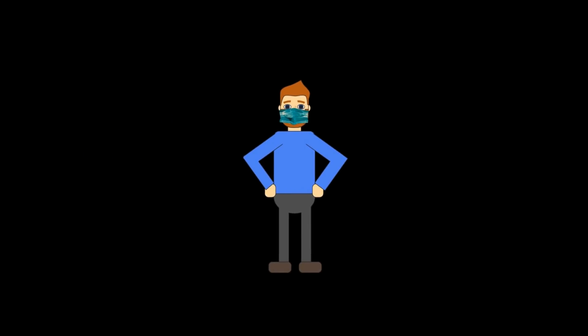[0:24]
Hey guys, so the coronavirus is going around. N95 masks are hard to find because people keep buying them off the shelves. Doctors and hospitals are in need of these masks. So I decided to do a video about how you could make your own mask from materials that you would find in your own home.
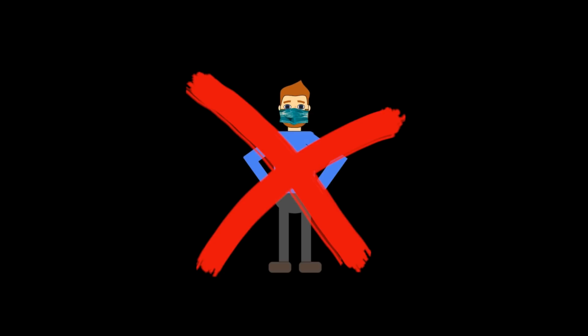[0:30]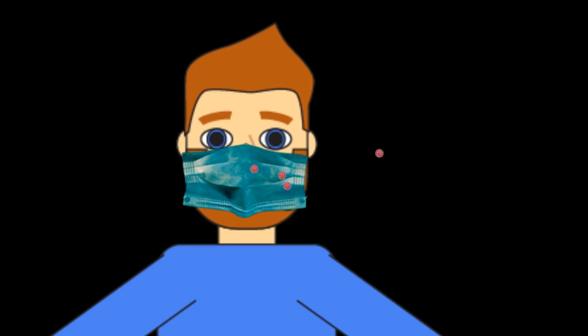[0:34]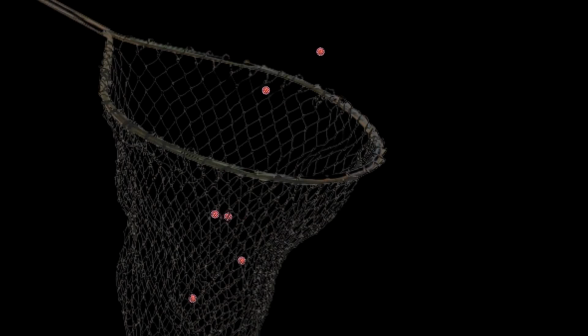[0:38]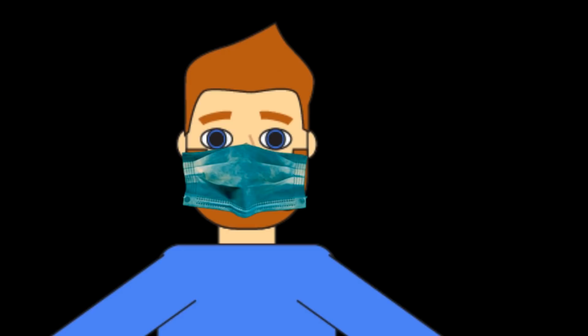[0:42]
Many people today are wearing masks to prevent the spread of COVID-19. In fact, it's now becoming a trend on social media and is used as an everyday accessory. However, this will do little to protect you from getting the virus. In general, surgical masks filter particles to approximately 5 microns in size. Because of this, it's only best to use them if you're sick, as a way to block the virus from finding another mode of transmission.
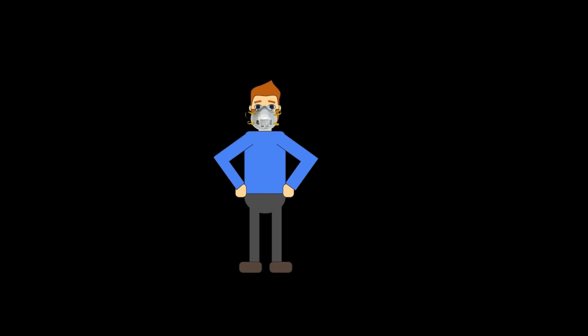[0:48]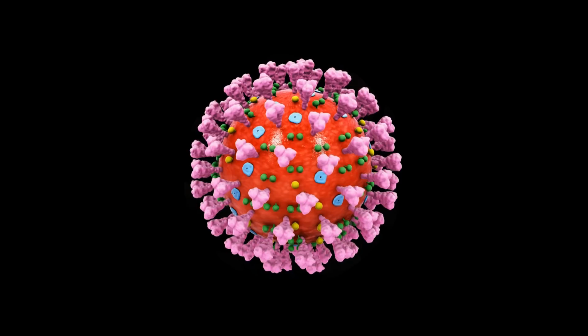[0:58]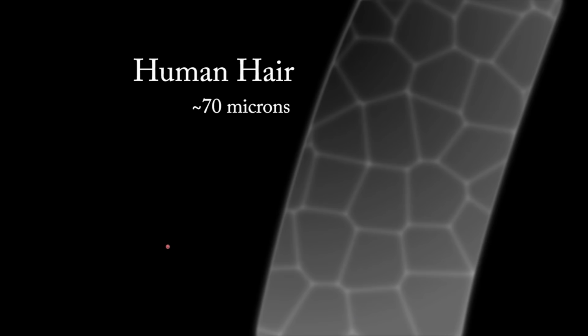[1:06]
N95 is a government efficiency rating that means the mask blocks about 95% of the particles that are 0.3 microns in size or larger. The COVID-19 virus is approximately 0.125 microns. It often travels in biological aerosols from coughing and sneezing, which range in size from 0.5 to 0.3 microns.
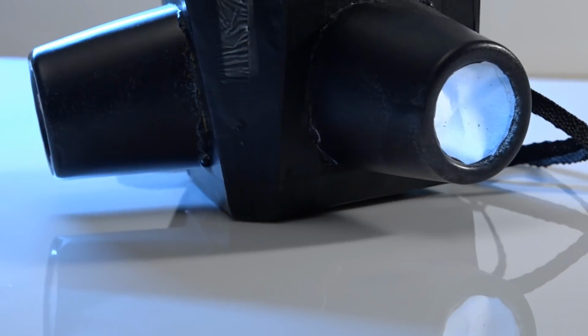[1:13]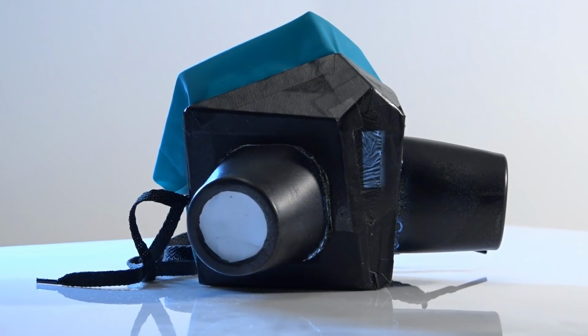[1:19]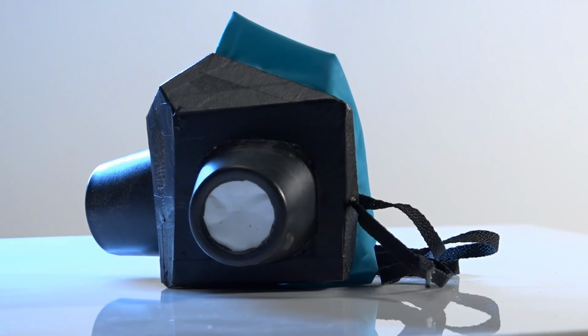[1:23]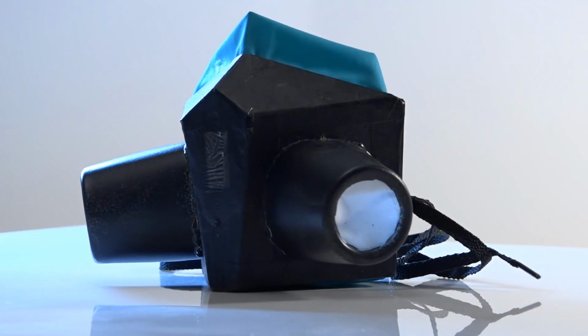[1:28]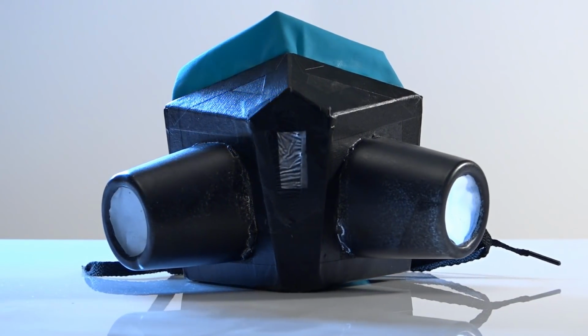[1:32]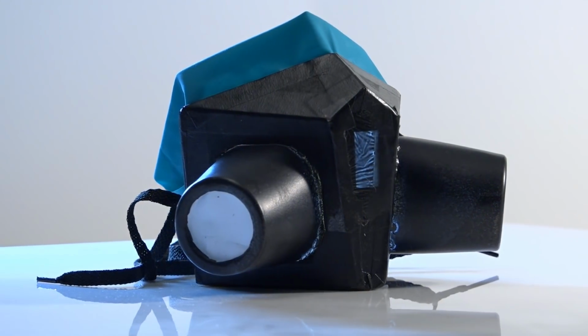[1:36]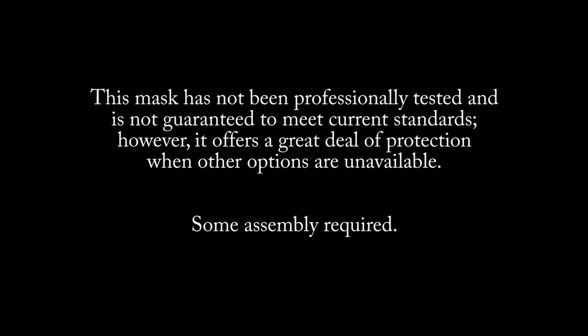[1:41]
Introducing the Big Bits N100 mask. It's water-resistant and has replaceable filters. It's comfort-fitting and made entirely out of material you'd find in your own home. The mask is far more effective than an N95 mask, and with proper care, could last for months. And at a cost of $1.50 each, it is guaranteed to be your mask of choice for frontline care when commercial masks are of no use. Make yours today, some assembly required.
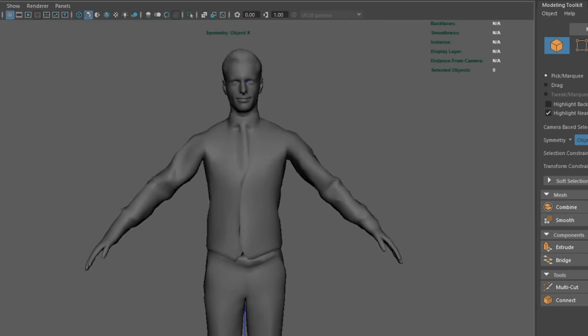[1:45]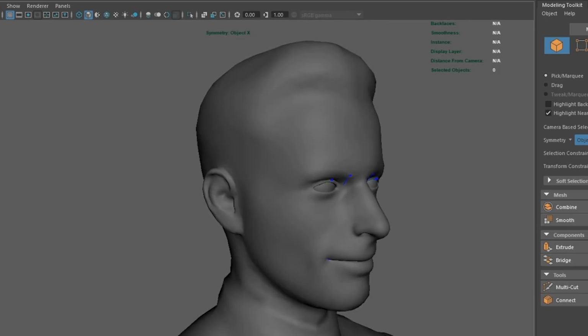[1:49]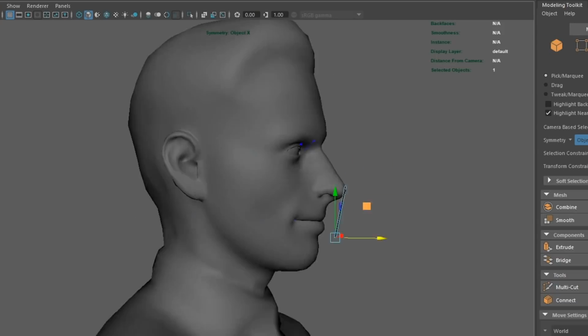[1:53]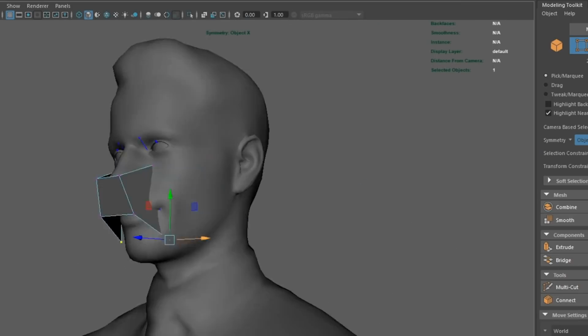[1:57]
First, I went over to renderpeople.com and downloaded a free human scan, and I modeled a mask to fit using Maya so I could keep the polygon count low. This helps to accurately unfold the model into cardboard pieces later.
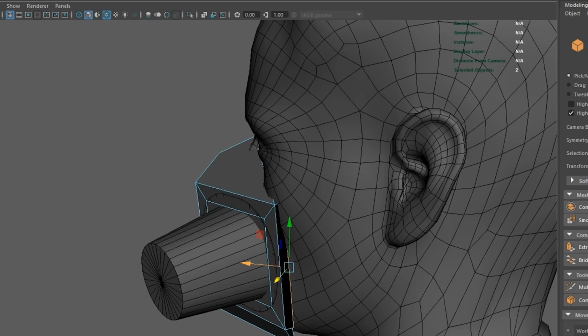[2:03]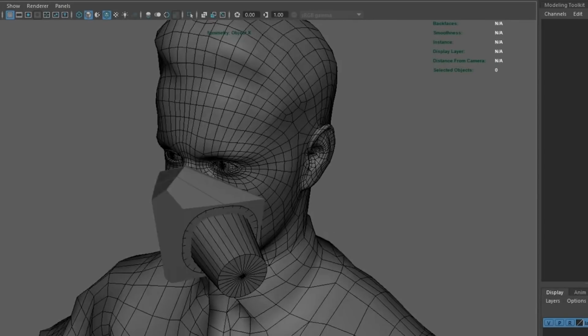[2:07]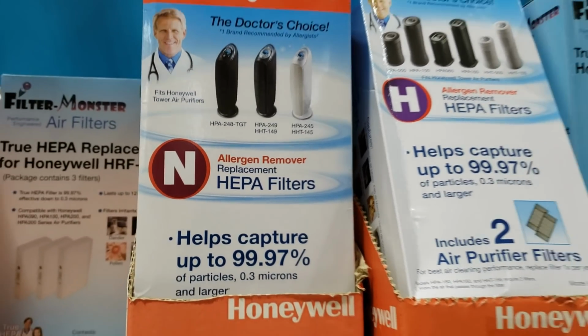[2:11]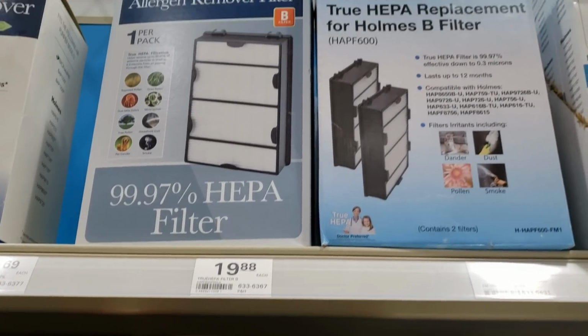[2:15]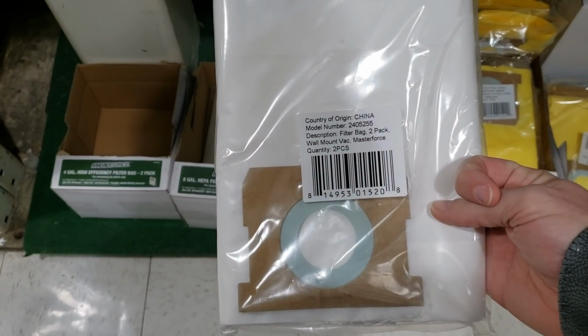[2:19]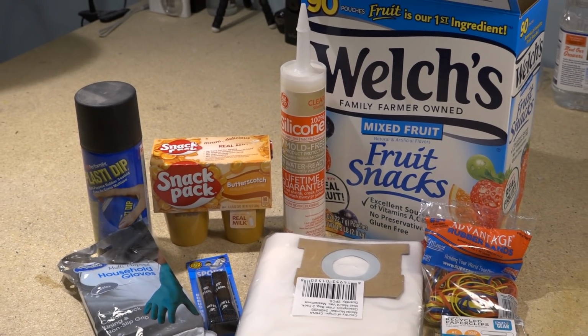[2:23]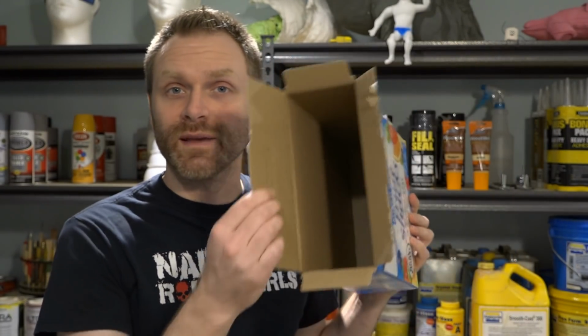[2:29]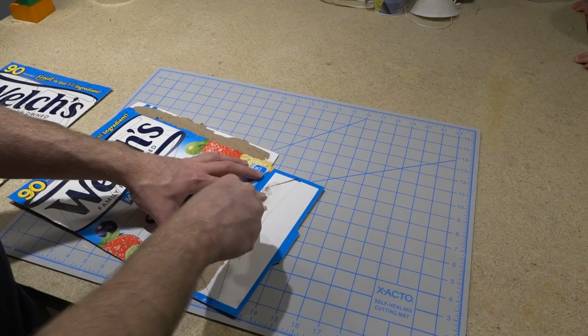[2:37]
My goal with this project was to use things that might already be lying around the house. But if they're not, you can still find them readily available in stores, as none of these components have been hoarded yet. Now you gotta go find the thickest cardboard that you can find. For me, that was a fruit snack box. It feels like it's about 3 times thicker than a cereal box, so we want it to be sturdy, but we want it to be thin.
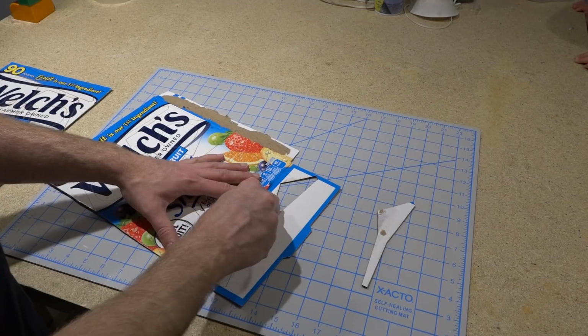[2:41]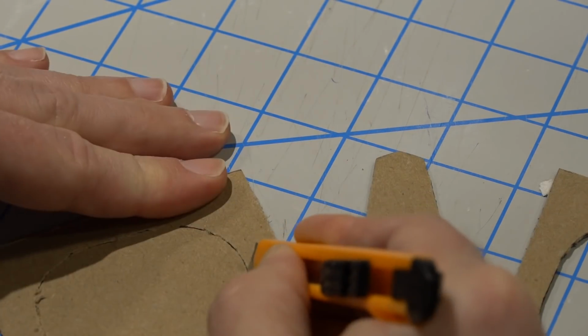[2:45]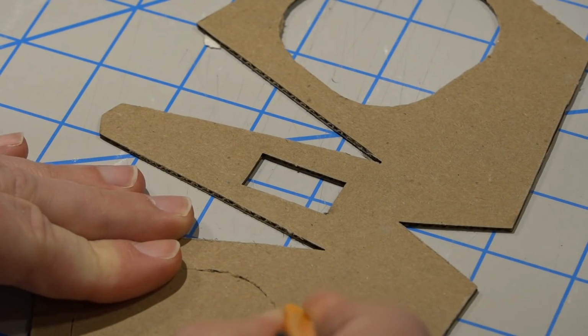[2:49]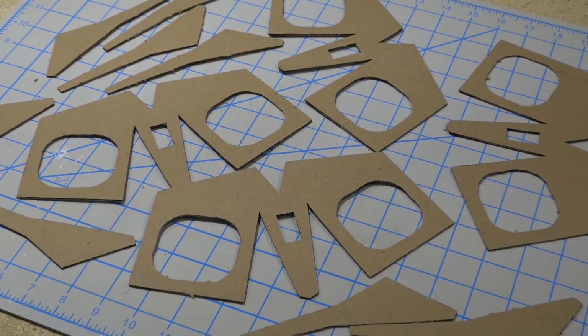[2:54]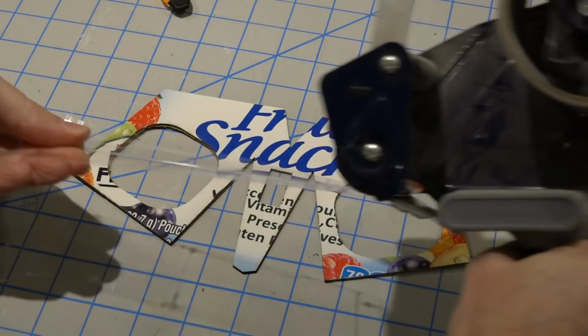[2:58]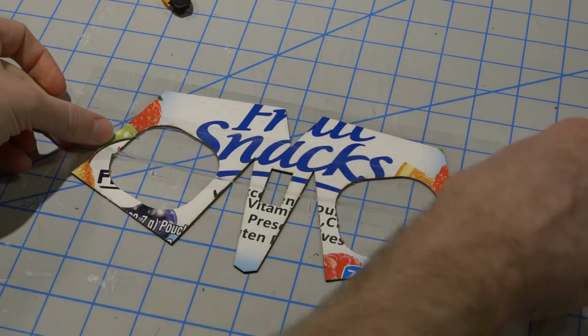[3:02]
Step 1. Cut out the cardboard using the template on the Big Bits website. We want the mask to be reusable, which means we have to make it water resistant. I did this by coating the inside surface with clear packing tape.
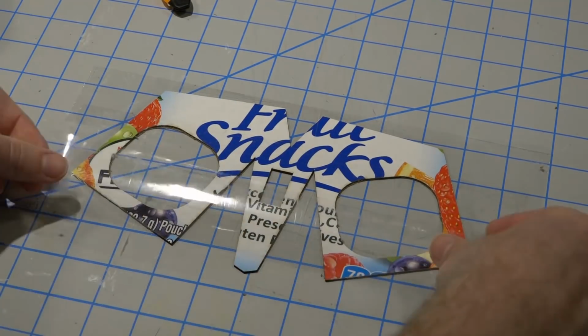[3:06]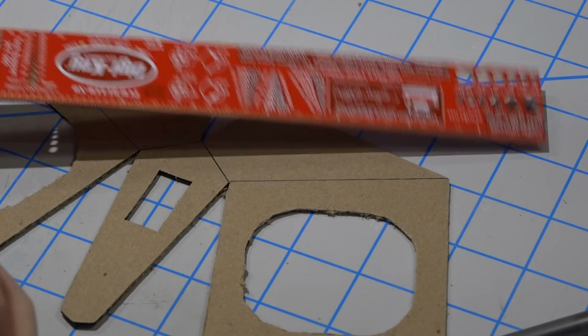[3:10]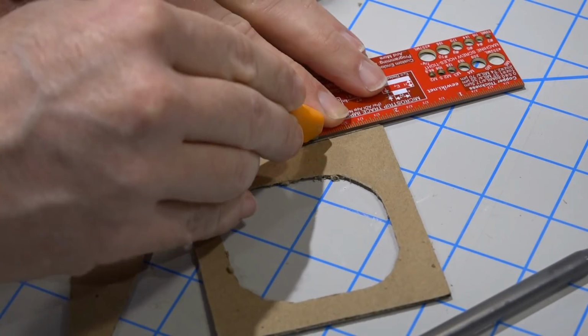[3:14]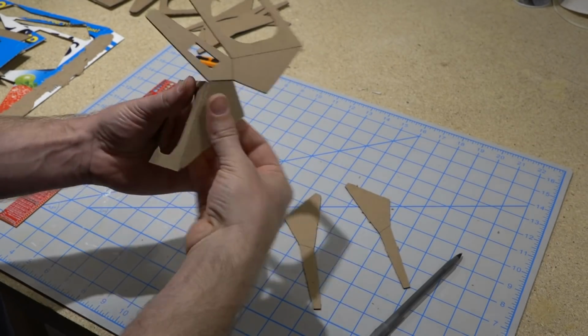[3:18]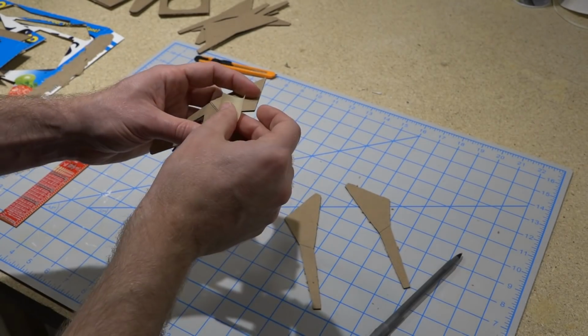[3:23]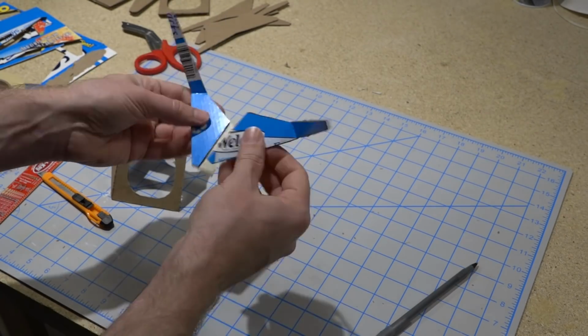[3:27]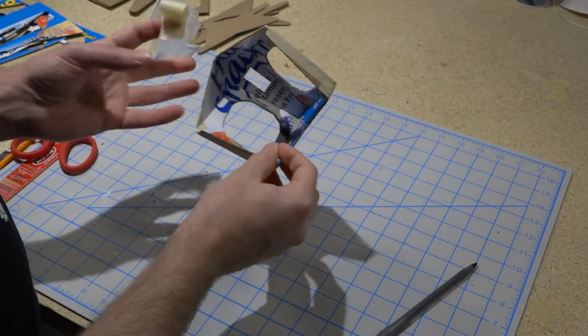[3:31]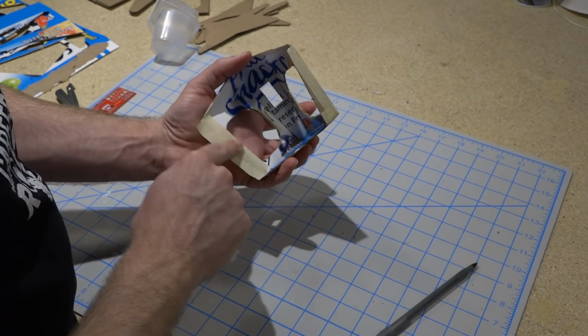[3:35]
I connected the points with a straight edge and scored the cardboard with a blade so it could be easily folded. Then I taped up all the seams and edges with masking tape. I specifically chose masking tape because I will coat the outside in Plasti-Dip and it sticks nicely to the masking tape.
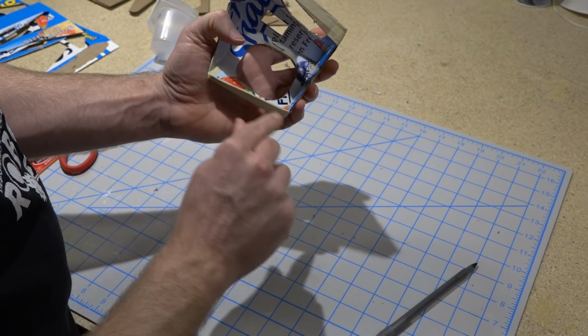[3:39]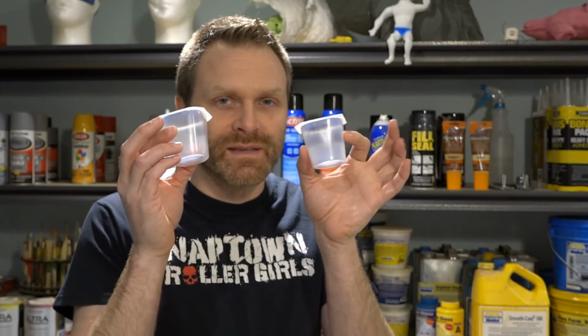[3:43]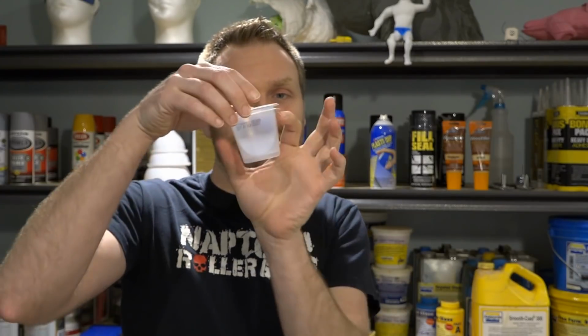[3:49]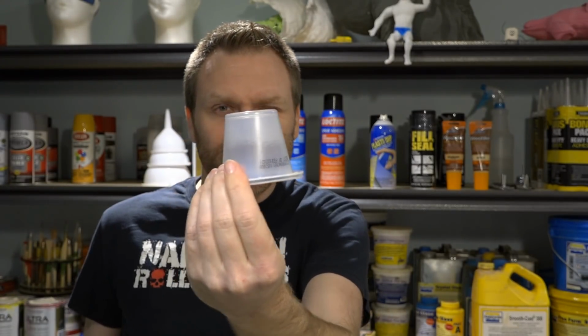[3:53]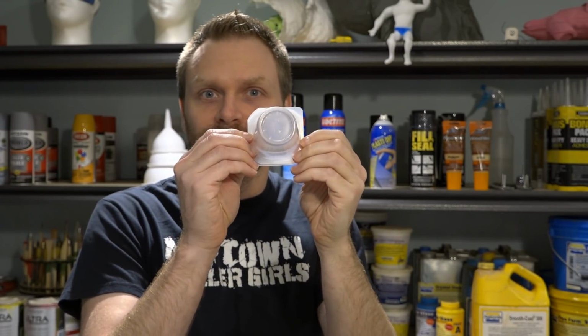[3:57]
Remember that pudding that I bought? We're going to use the cups as the filter cartridge. So the important thing is that you get cups that are tapered so that they're stackable. This little spot right in there is where that filter is going to go. So we've got just enough space in there for that HEPA filter.
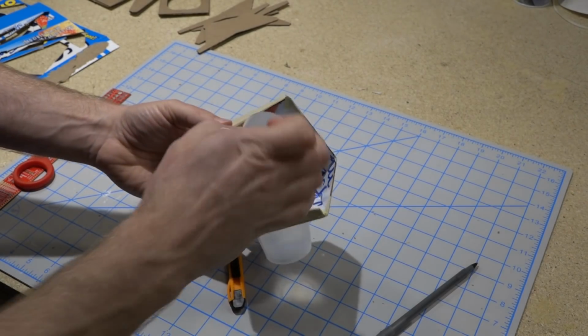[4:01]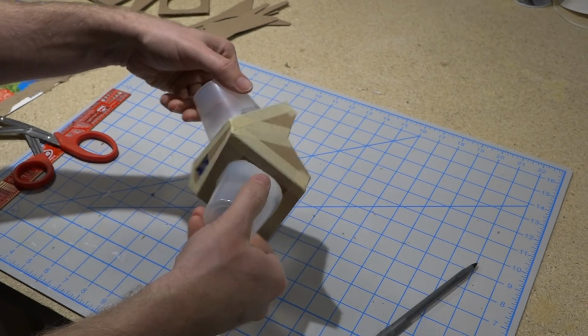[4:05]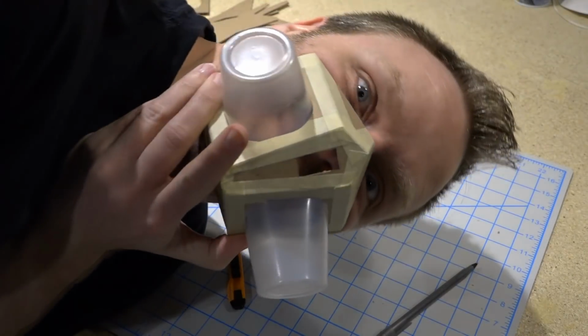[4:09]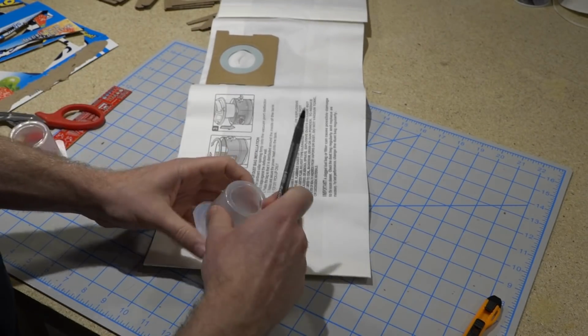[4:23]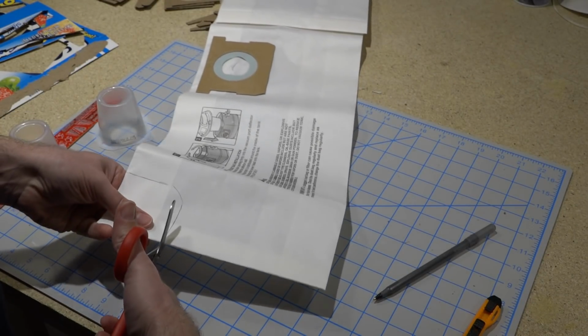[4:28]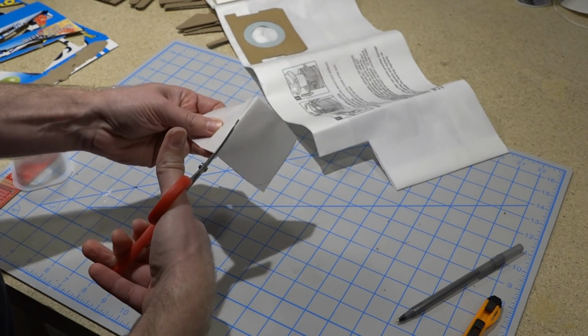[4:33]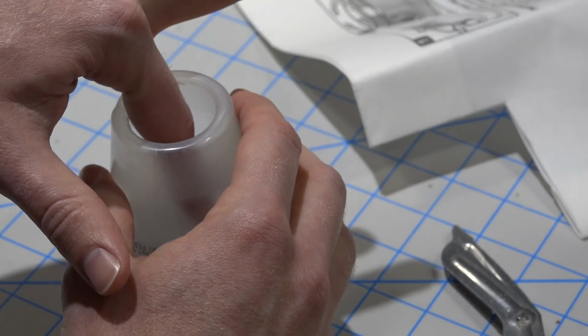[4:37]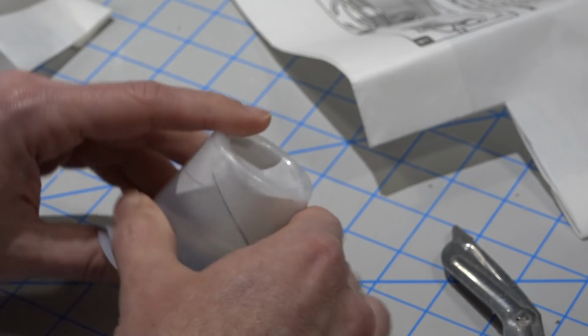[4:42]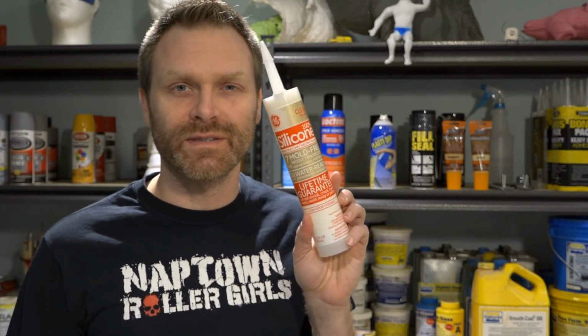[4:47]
The filter that I got is a HEPA filter for a shop vac. This particular HEPA filter filters out 99.97% of all things over 0.3 microns in size. We're going to seal up all the cracks and crevices with silicone.
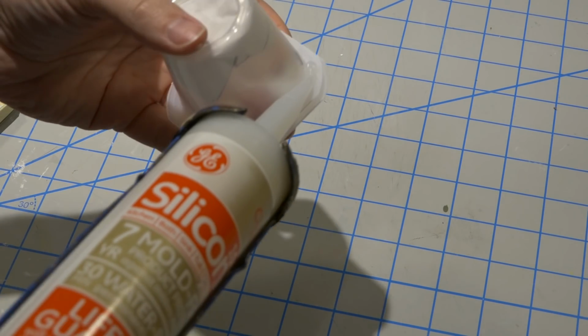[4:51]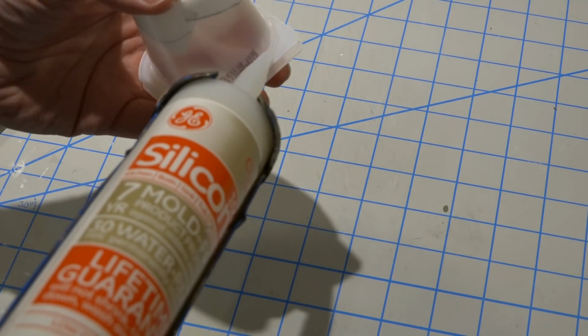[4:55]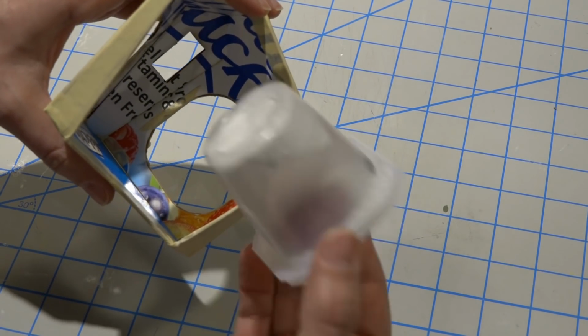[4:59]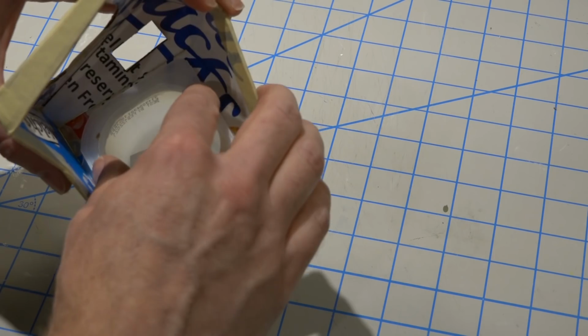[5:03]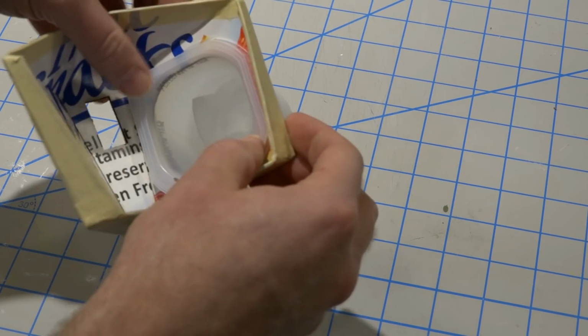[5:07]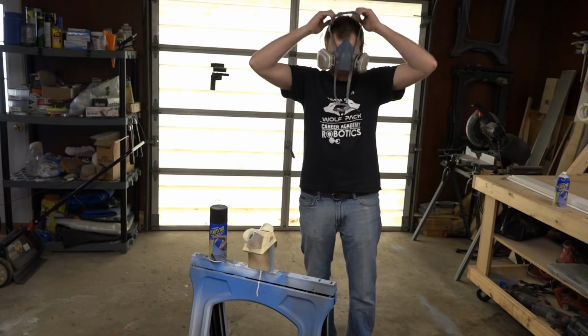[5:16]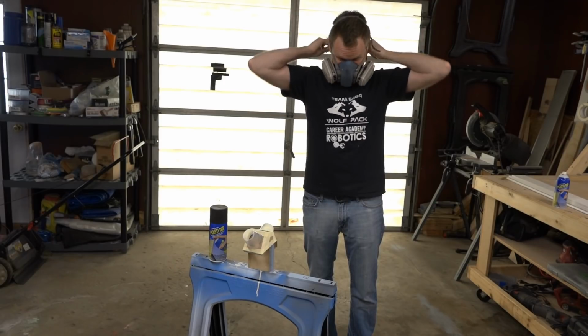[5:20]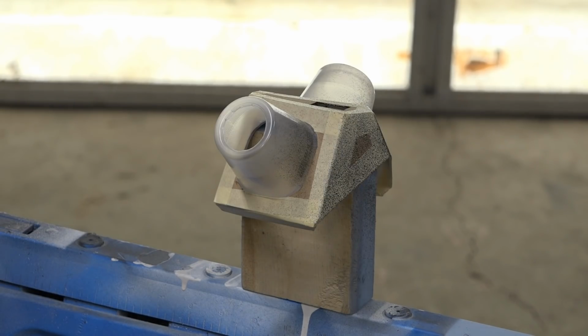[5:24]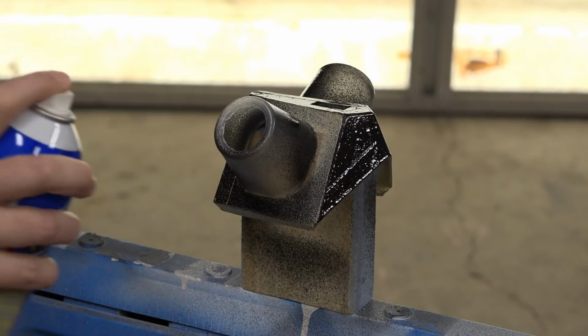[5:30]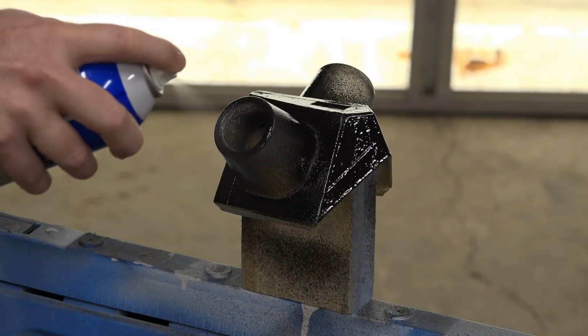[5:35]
I'm going to use Plasti-Dip to make the outside surface of this mask impenetrable. Ironically, you need to be wearing a P100 mask when you spray Plasti-Dip. This coating will not only make the surface impenetrable, but it will also make it water-resistant, meaning the mask can be sterilized and reused. For a cheaper option, just use packing tape to seal the outside.
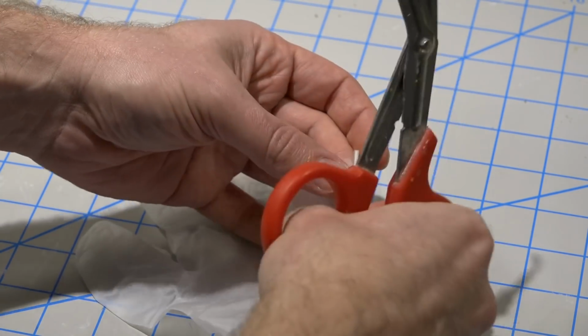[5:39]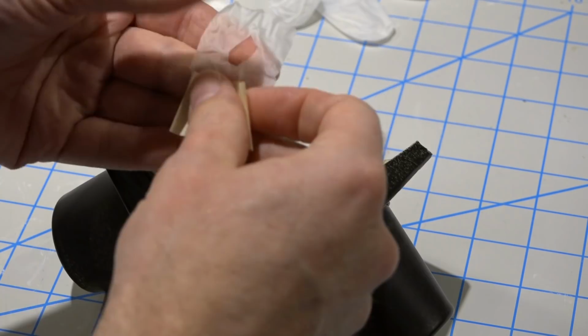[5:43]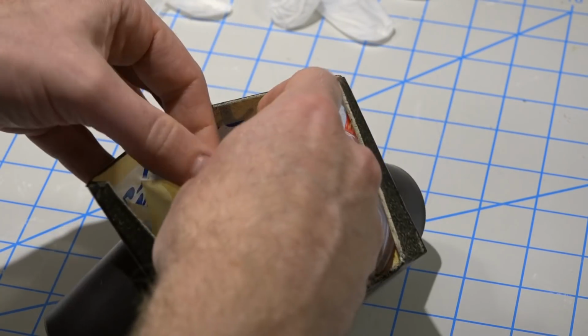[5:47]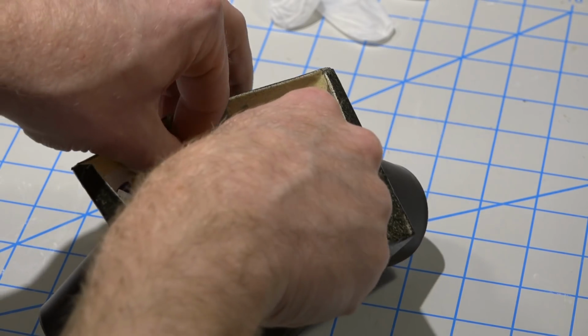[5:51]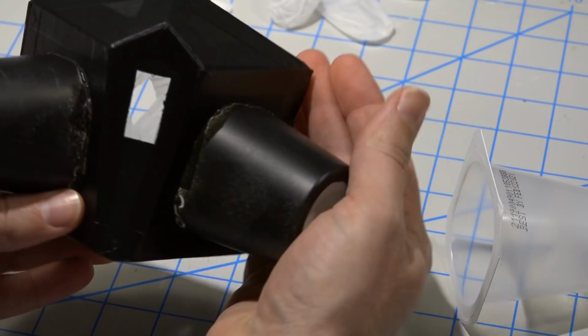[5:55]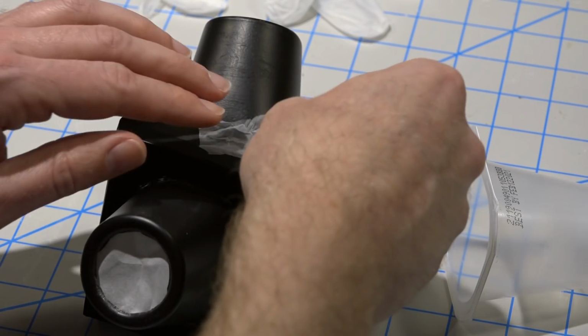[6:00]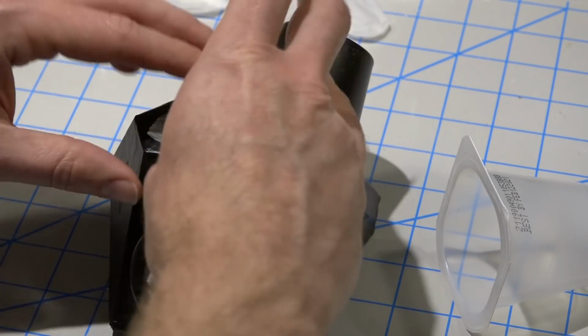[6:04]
Here I made a simple one-way valve to make exhaling easier and to help cut down on moisture buildup inside the mask. This is an optional step and may or may not decrease the protective qualities of the mask. The valve is made of two layers of rubber. The inside layer has a hole in the center, and the outside layer is stretched tightly over the hole with a gap in the tape to let the air out.
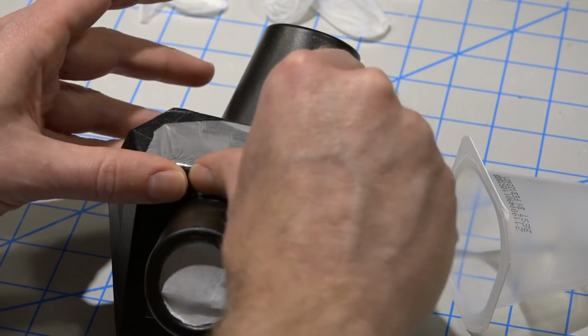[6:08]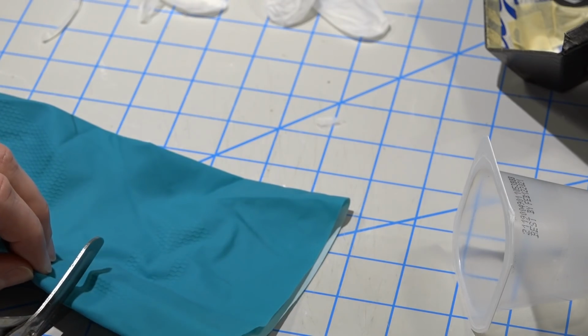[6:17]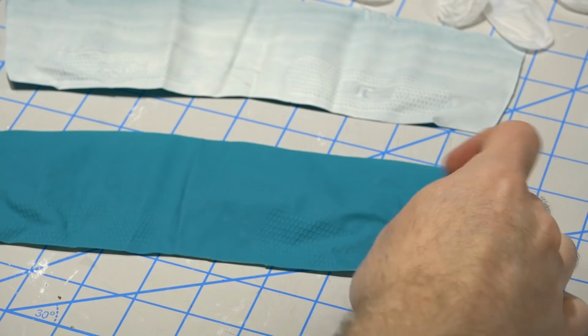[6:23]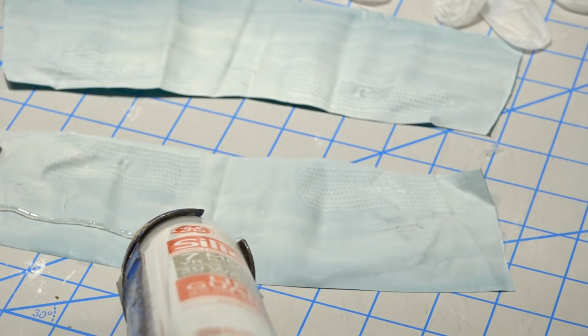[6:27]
Now I'm going to use some common dish gloves to make a nice seal around the outside. There are many types of dish gloves. It may be best to use a latex-free glove to prevent allergic reactions. The important thing here is to use a thick enough rubber that it seals the mask around your face.
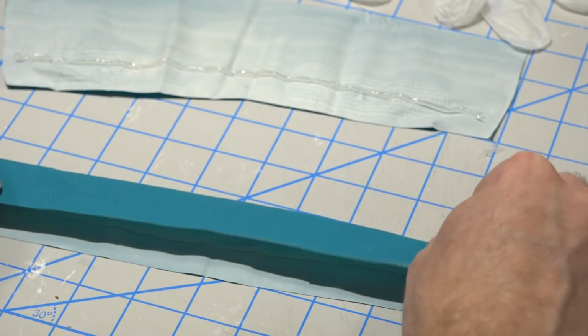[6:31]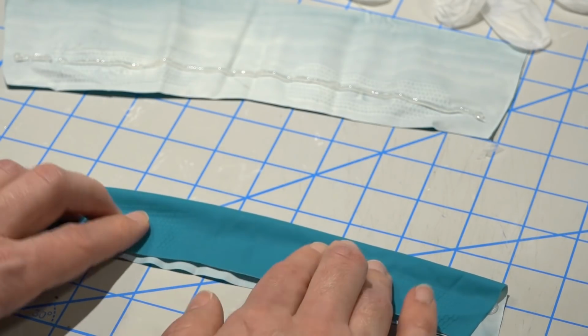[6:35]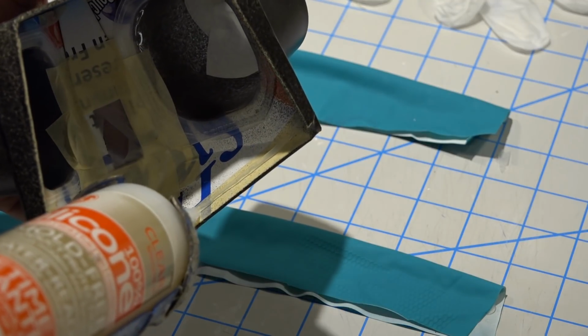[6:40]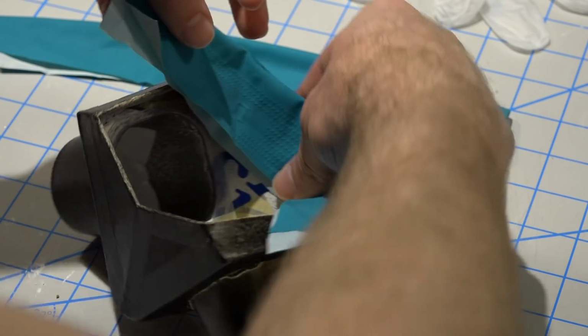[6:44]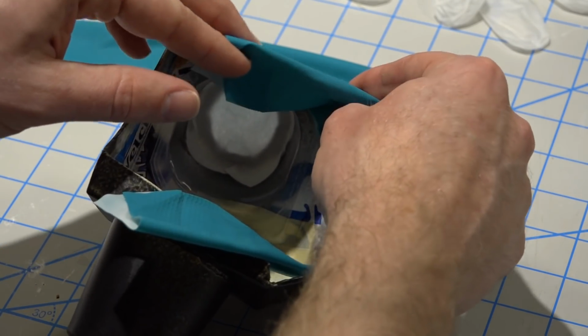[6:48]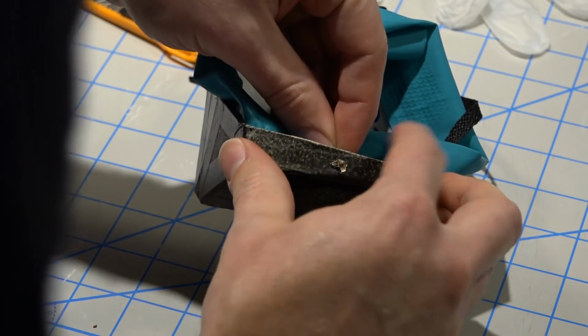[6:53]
Now we use the silicone again to seal the rubber gasket to the inner edge of the mask. For the strap, we're going to use shoelaces. Make sure the hole for your strap is on the outside of your rubber seal.
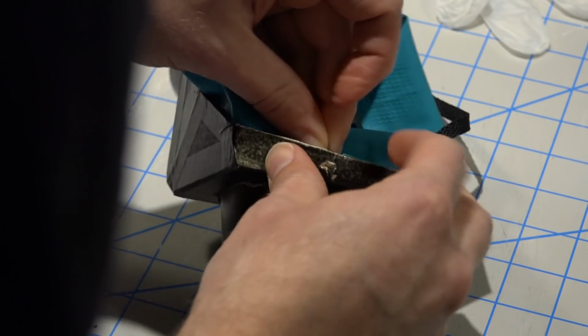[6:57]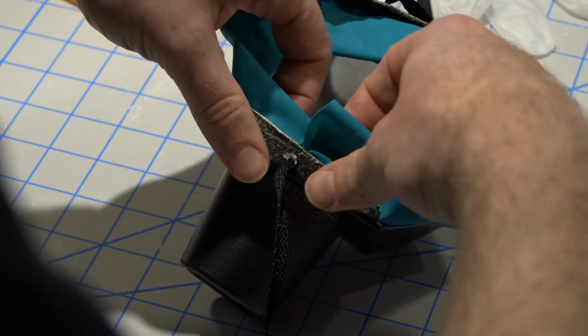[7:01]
No build like this would be complete without a test. Natural wood smoke particles get down to about 0.3 microns at the smallest. That's about how big this virus gets at its biggest, so there is some overlap there. Plus, the N95 and N100 masks are made to block particle sizes of at least 0.3 microns in size.
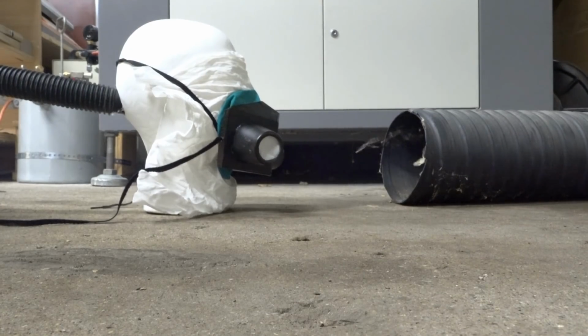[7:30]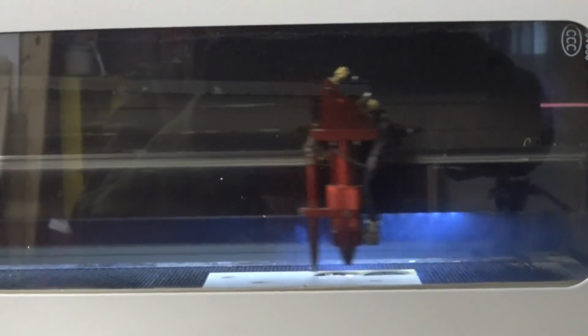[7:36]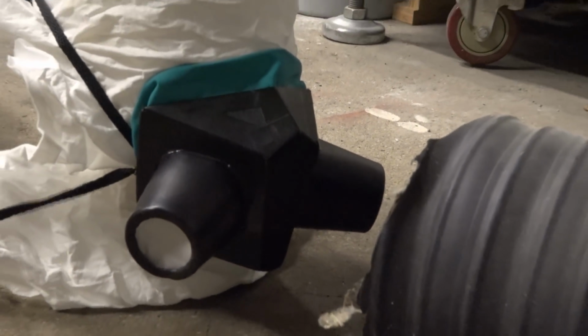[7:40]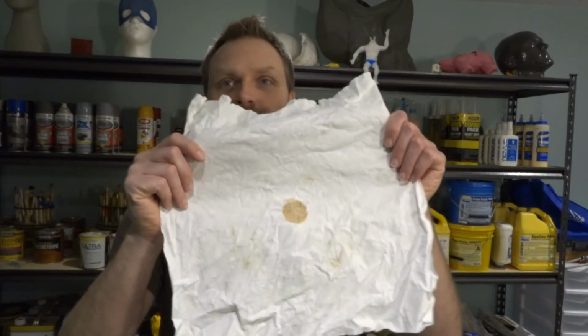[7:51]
So the best test I could do is blow a lot of smoke at my mask and see if a cloth on the other side of it would be clean. So I hooked up a shop vac to the other side with a sponge in the way so it didn't have too much air pressure sucking in, because I wanted it to simulate what our lungs would actually be doing when we're breathing. So the first time I did this test, the cloth came out brown.
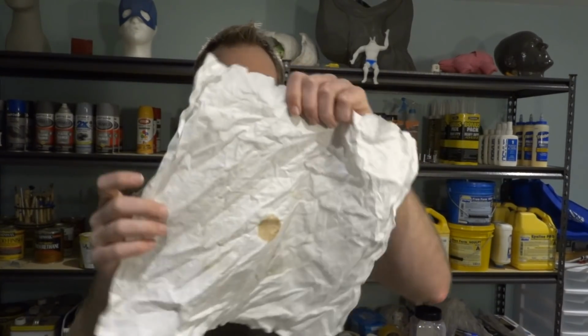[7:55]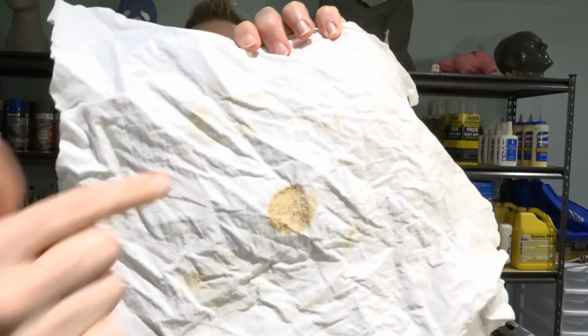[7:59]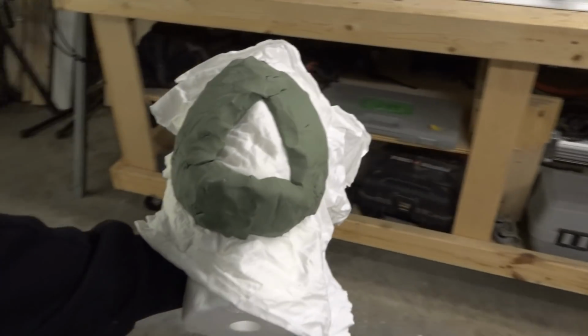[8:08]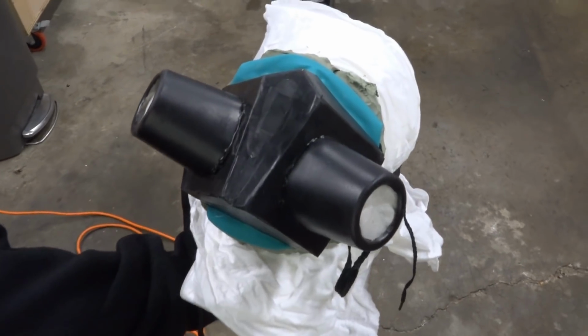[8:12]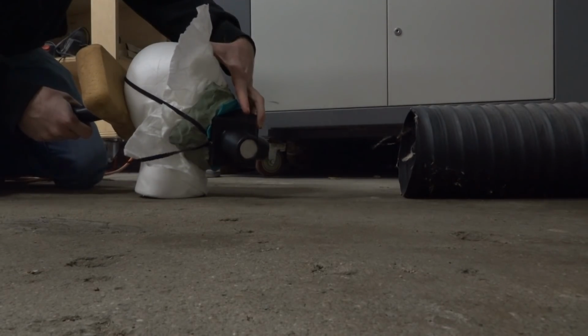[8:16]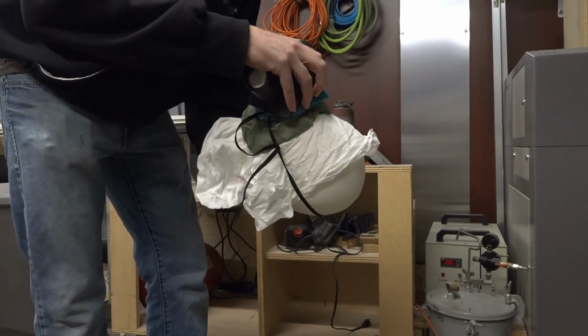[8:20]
This is the hole in the dummy's mouth. But what I noticed, and you might not be able to see this, is around the outside edges here, it is very tan, which means the smoke was coming in from around the mask, not through the filters. Then I did another test where I put clay around the mouth of the dummy to simulate the softness of the skin, and to give a better seal around the outside. It came out clean.
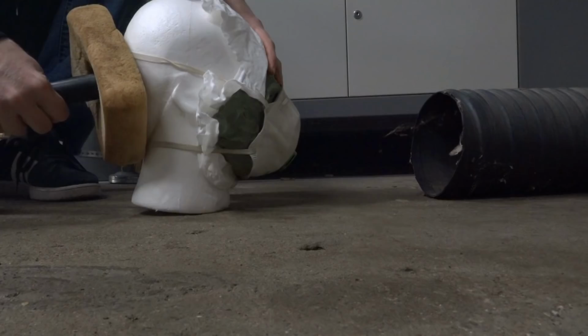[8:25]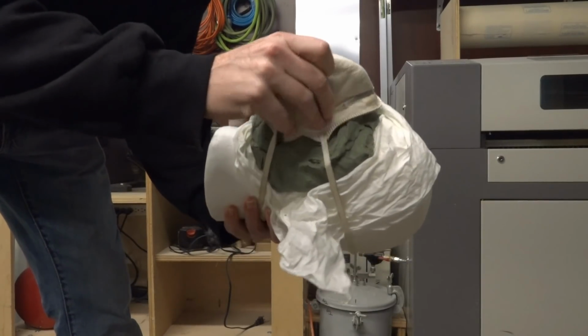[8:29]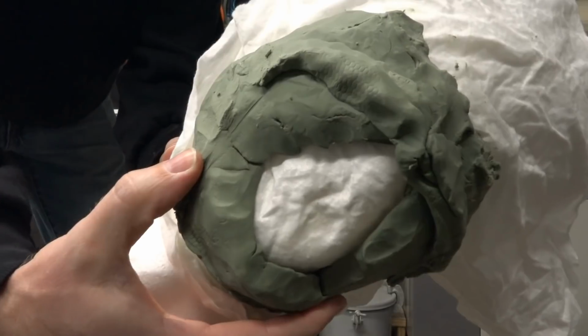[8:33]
I also tried it with the N95 mask that is commercially available, and I got the same results. However, when I was testing my mask, I was wearing the N95, and when I was testing the N95 mask, I was wearing my mask. My mask actually blocked more of the scent, the odor from the smoke, than the N95 did. So I believe it is a true N100 mask.
And because I had the problem around the outside edges with form fitting to the face, I did make a few adjustments, and those adjustments are reflected in the template that is at makingbigbits.com. So go ahead and download that template now.
If everybody was to make a handful of these masks with whatever materials they had a hold of, we could supply potentially hundreds, if not 1,000 of these masks, and hopefully help just a little bit with these medical professionals and the shortage of equipment. So get out there and make things, do things, and make a difference.